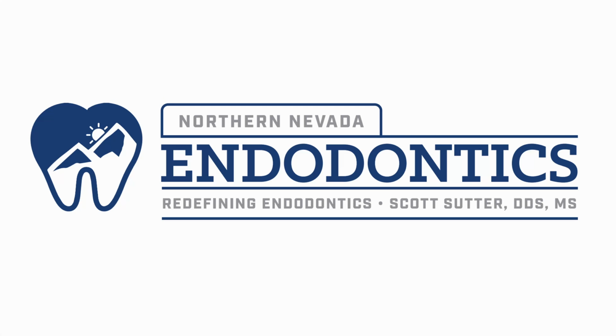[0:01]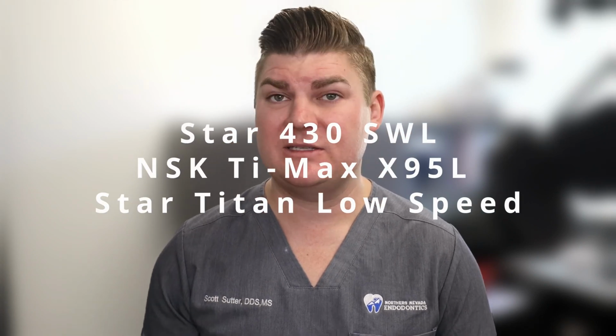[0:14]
Today we're going to be going over something a little bit different. One of the ways to make your practice run more efficiently and control your overhead is to do some of the maintenance yourself on broken equipment. I have three different types of dental handpieces that I use, and today I'm going to show you how to change out the turbine on a Star 430.
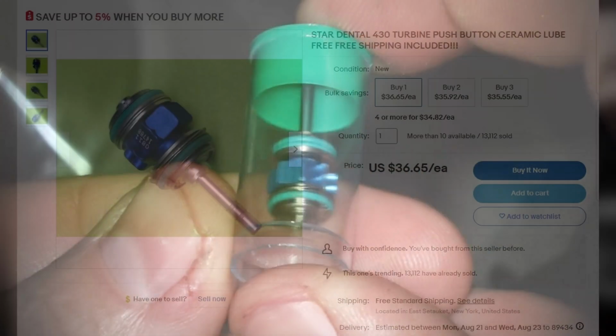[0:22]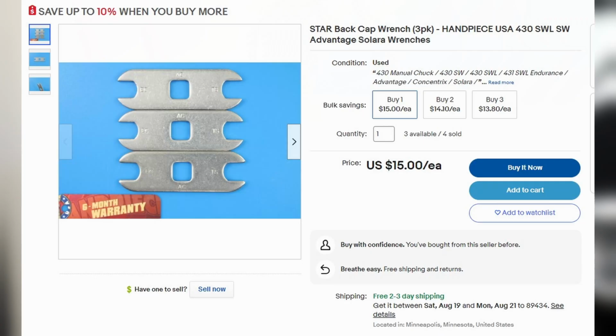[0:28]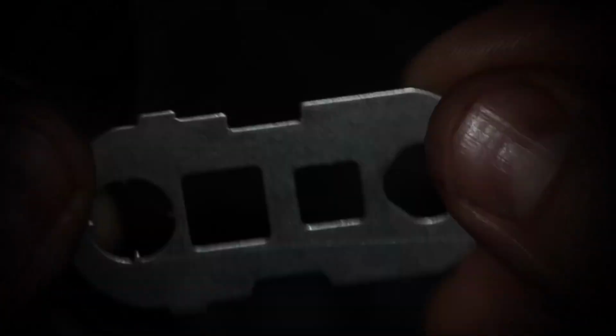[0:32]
I purchase replacement turbines from my favorite store, eBay, and I buy 10 at a time, so with the bulk discount, the cost is about $35 to $40 per turbine. You will also need a way to remove the back cap. I have a different version than the one I have shown here because it's not really available anymore. However, as long as you have something that works, that's all you need.
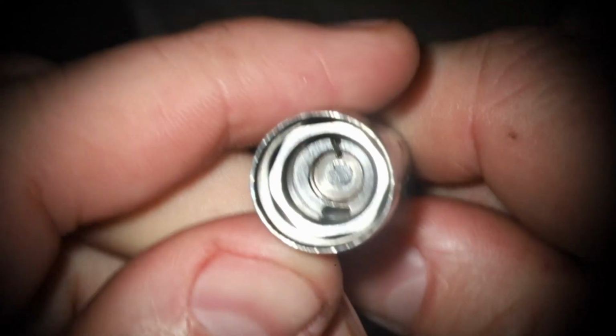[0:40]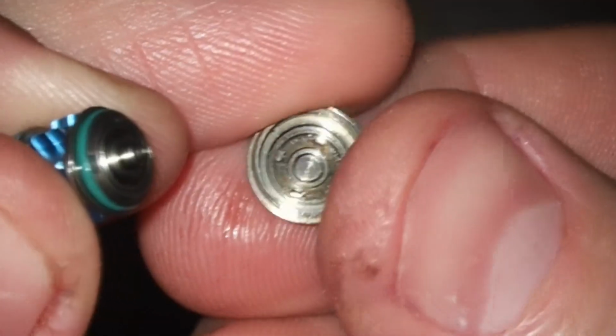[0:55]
The first step is to examine the inside of the handpiece to make sure there's no debris. Usually this is cleaned out during sterilization, so it's not that common of an issue. However, since you're going to be cleaning it out, may as well look in there and make sure everything looks clean. Then remove the back cap by using the square wrench and make sure to examine the back of the cap to make sure there's no debris inside there as well.
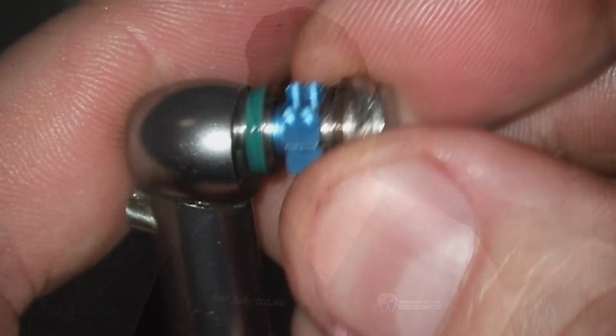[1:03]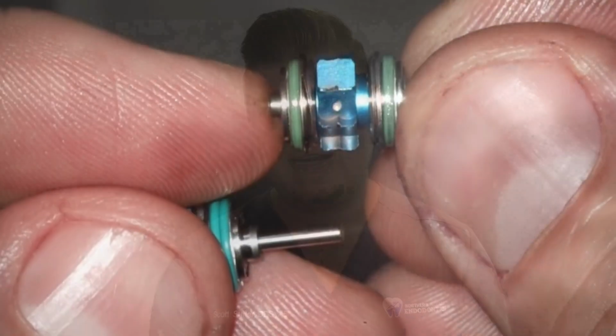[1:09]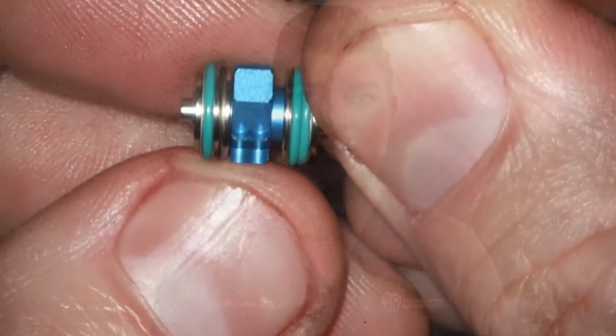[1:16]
Sometimes you'll need to use either a dummy burr or a big carbide to pop the turbine out. In this case, the turbine came out with the back cap. This turbine has had a lot of wear on the individual vanes, so that is why it was no longer spinning or keeping torque when I was working on patients. Compare that to a new one. You will sometimes see that the bearings have broken or that a vane is missing from the turbine. Regardless, these are all signs that you need to replace the turbine.
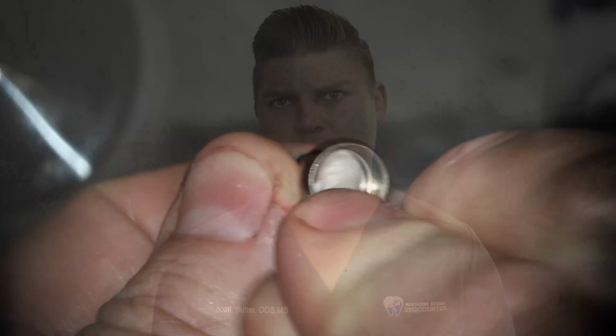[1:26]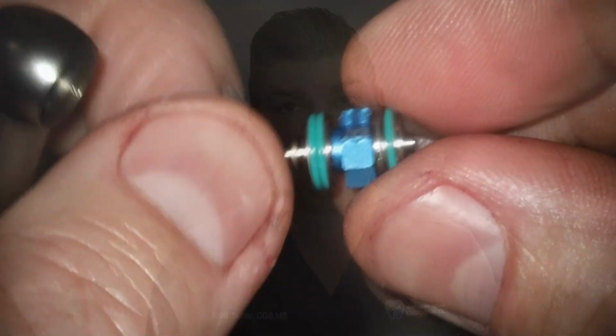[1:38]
After you have removed it, you'll want to clean the inside of the head as well. Sometimes there can be debris inside here that causes wear on the turbine. I use a Q-tip. It's very simple. Just kind of rinse it out with some water, scrub it with a Q-tip, and after it's all cleaned out, you just have to do the process in reverse.
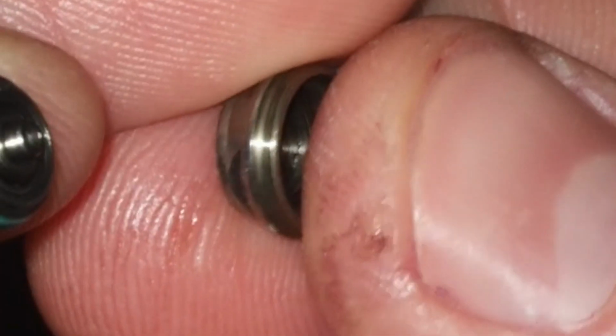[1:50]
So, pop that turbine back in, make sure that it looks good and that it spins freely. Sometimes there can be little impediments along the inside that you need to remove. You'll also sometimes notice a missing O-ring on the back cap, as in this case.
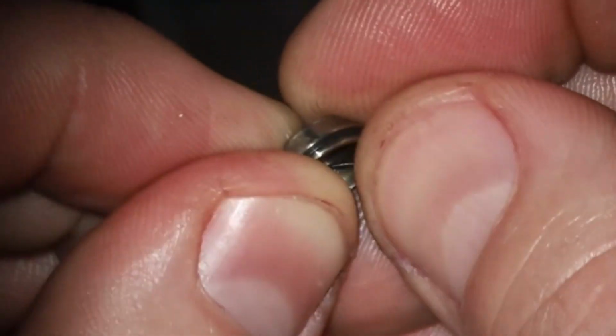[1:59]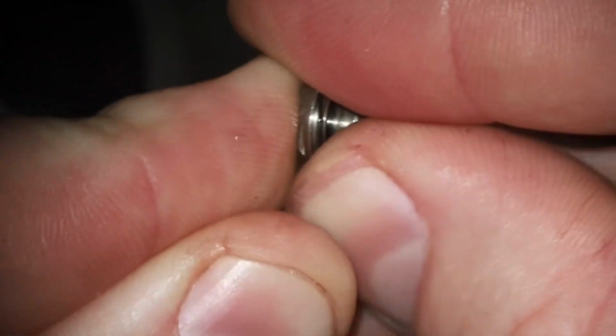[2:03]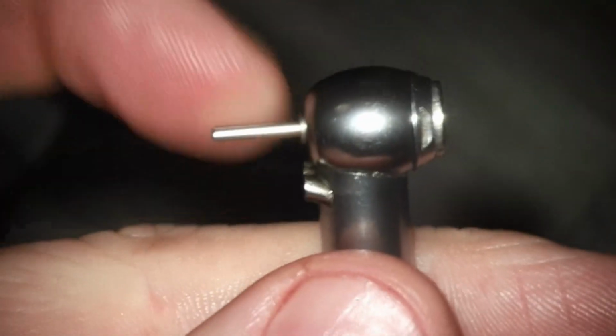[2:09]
You'll also want to put that back on the cap so that there isn't any leakage out the back of it when you're using it. Screw that cap back on, test fit it back on the adapter, press the pedal, make sure everything runs and spins, and you should be ready.
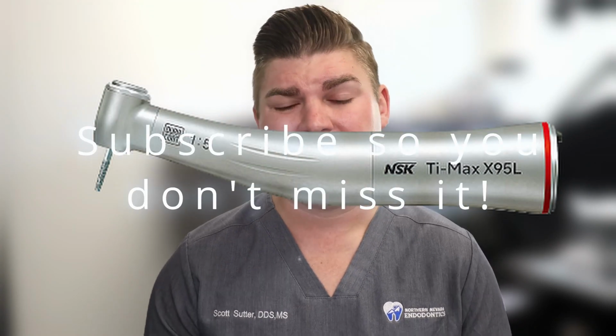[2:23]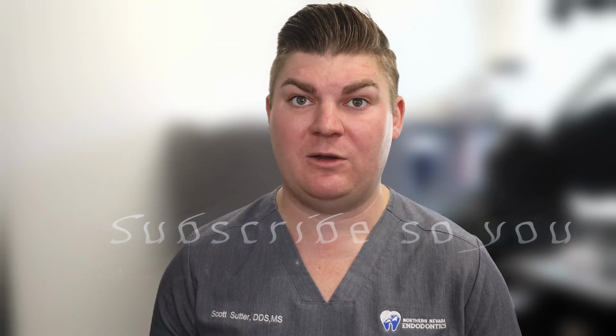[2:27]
For the cost of about $30 to $40 and about 3 minutes of your time, you've saved what is, on average, a $300 repair. I will also show you how I repair my electric handpieces in an upcoming video, as those are a little more involved, but the cost savings are quite significant with those.